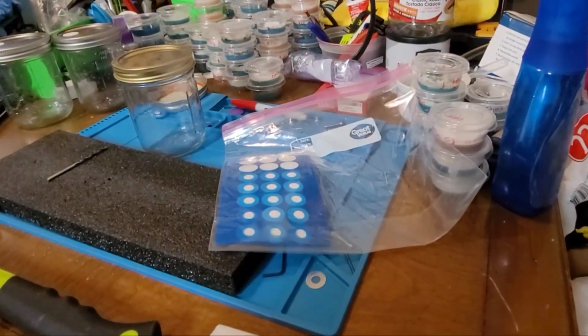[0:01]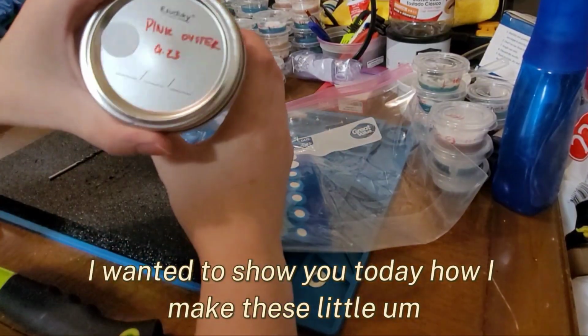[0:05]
Hi again everyone, I wanted to show you today how I make these little grain spawn jars.
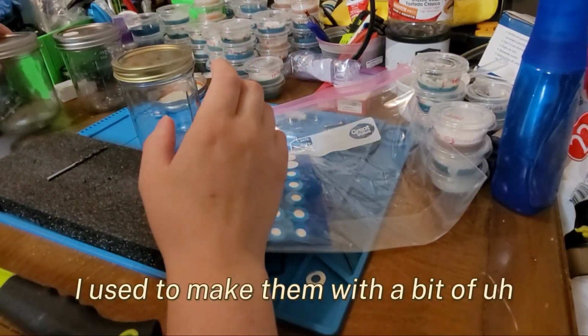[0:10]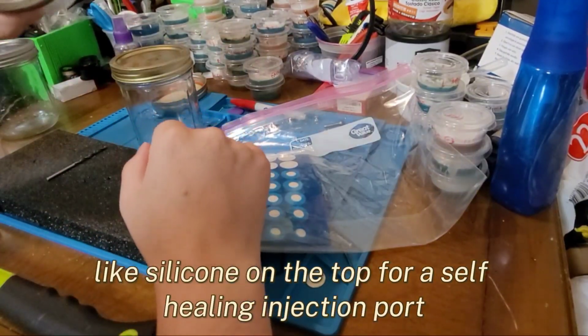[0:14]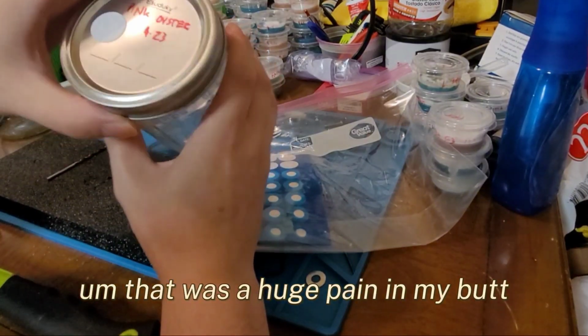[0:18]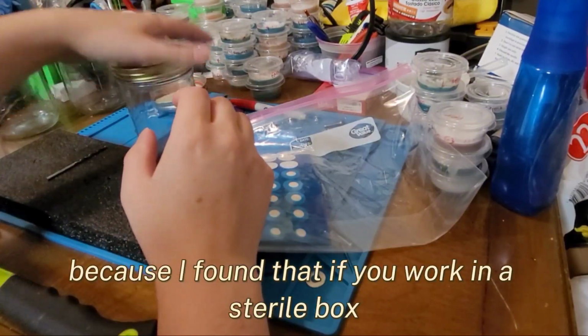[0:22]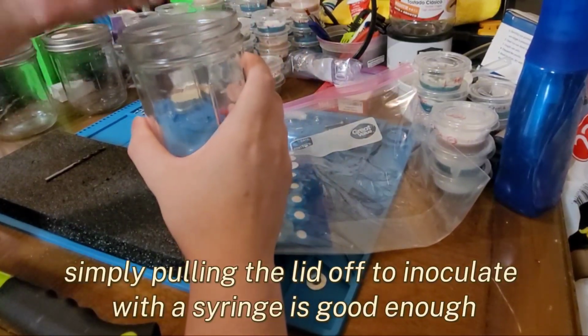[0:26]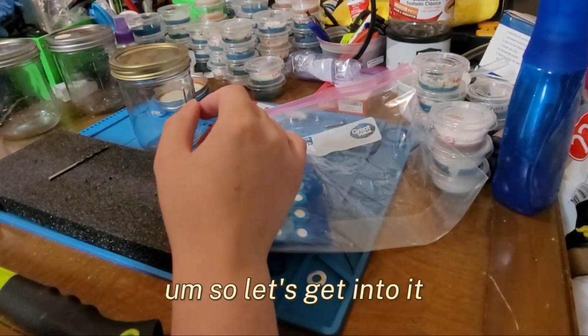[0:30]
I used to make them with a bit of silicone on the top for a self-healing injection port. That was a huge pain in my butt, and I don't really do that anymore because I found that if you work in a still air box or a clean environment, simply pulling the lid off to inoculate with a syringe is good enough. So let's get into it.
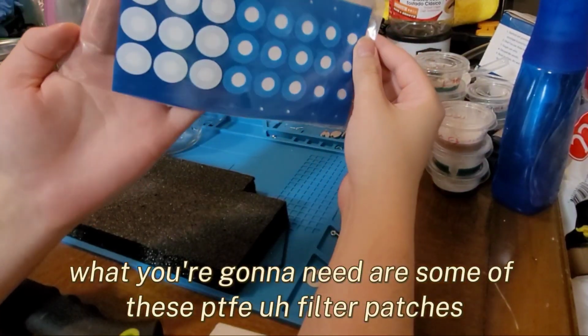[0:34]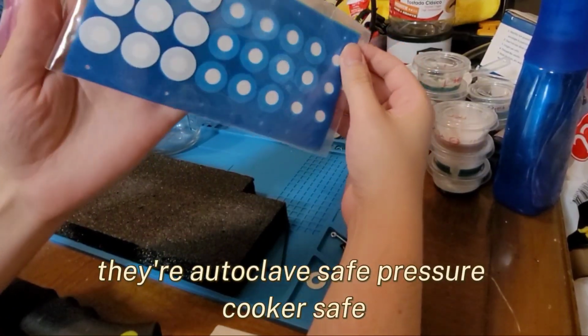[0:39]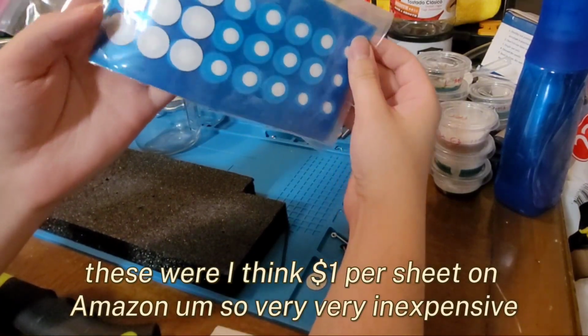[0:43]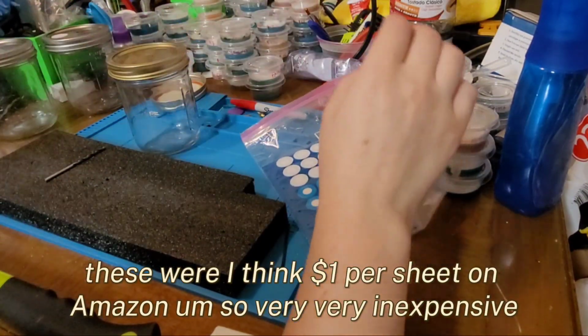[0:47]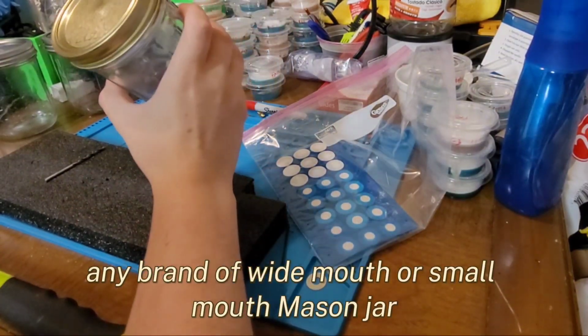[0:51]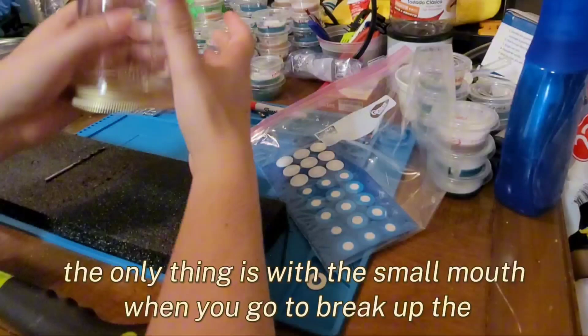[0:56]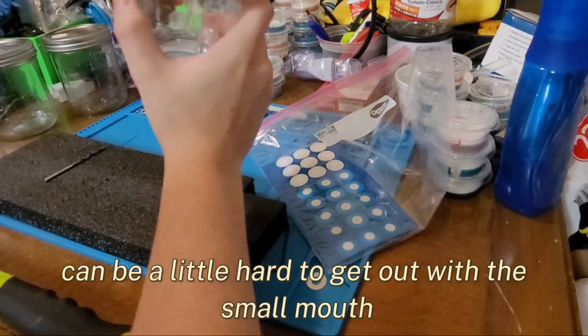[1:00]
What you're going to need are some of these PTFE filter patches. They're autoclave safe, pressure cooker safe. These were, I think, $1 per sheet on Amazon, so very, very inexpensive. Any brand of wide mouth or small mouth mason jar, either would work for this. The only thing is with the small mouth, when you go to break up the grain, it can be a little hard to get out, but you can still do it.
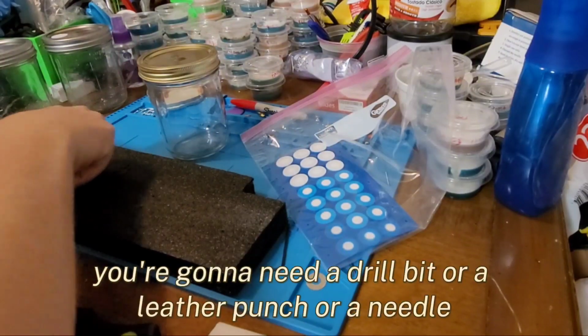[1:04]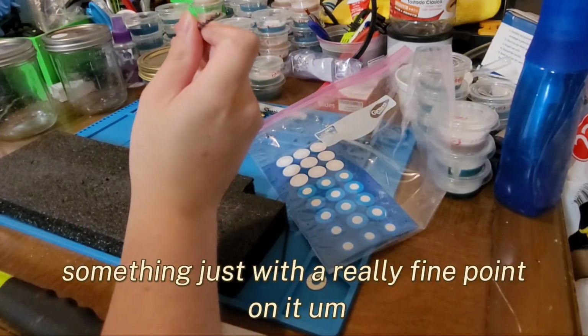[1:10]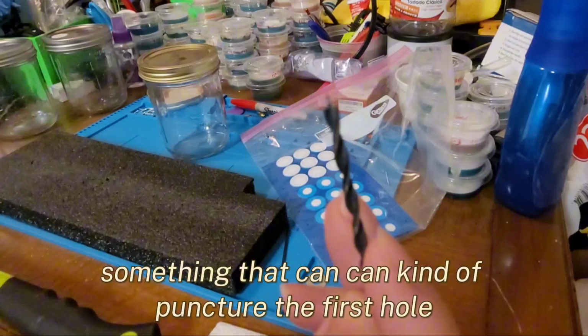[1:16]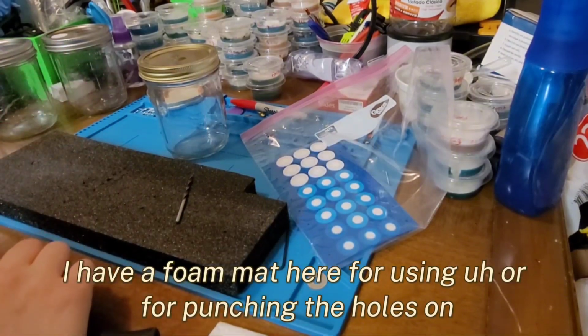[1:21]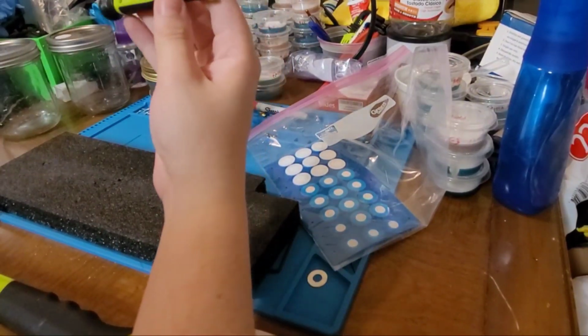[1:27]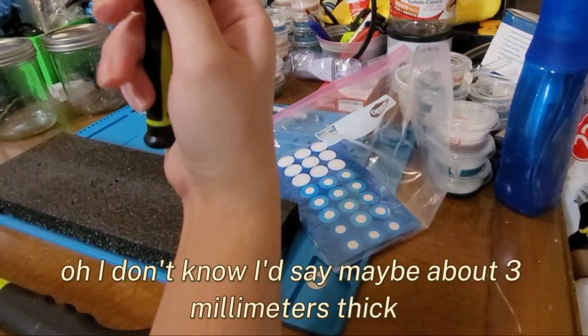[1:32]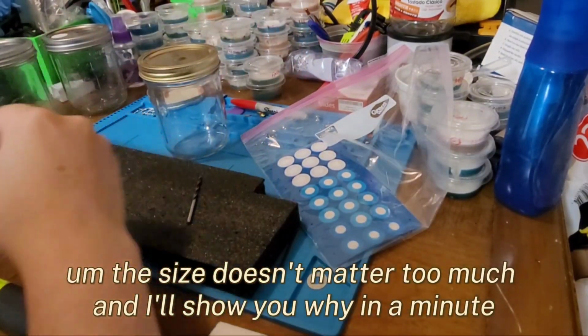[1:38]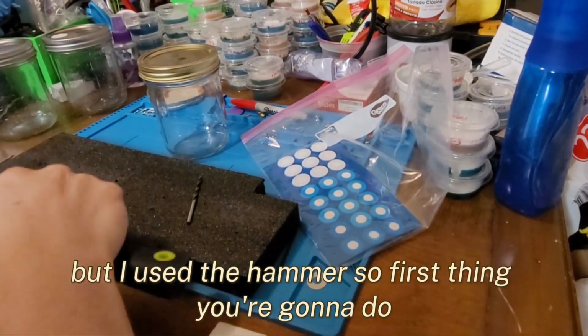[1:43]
So you need one jar. You're gonna need a drill bit or a leather punch or a needle, something with a really fine point on it, something that can puncture the first hole. I have a foam mat here for punching the holes on. I have just a regular Phillips screwdriver. It's maybe about 3 millimeters thick. The size doesn't matter too much, and I'll show you why in a minute. And then you're going to need a hammer. You could do this with a drill, but I used the hammer.
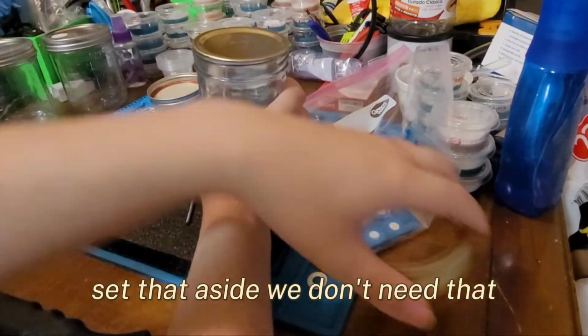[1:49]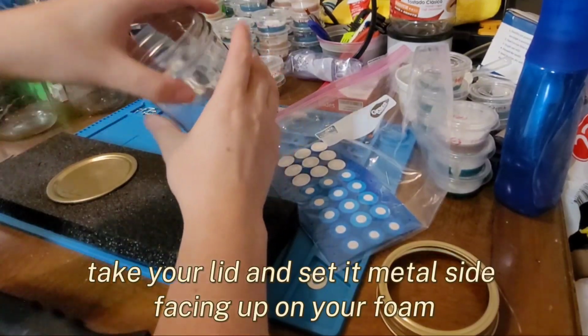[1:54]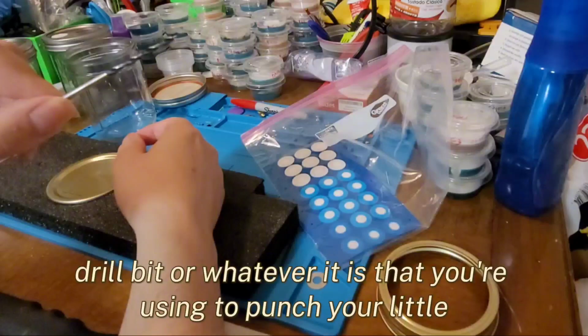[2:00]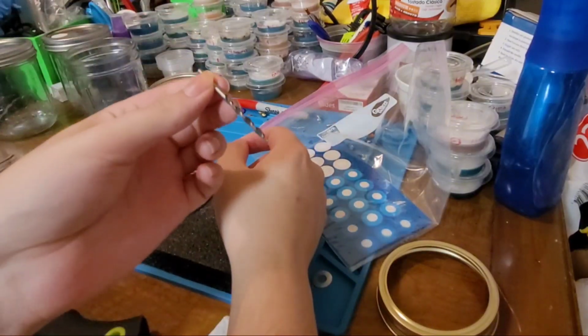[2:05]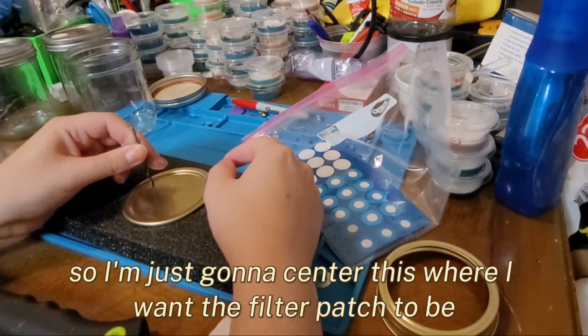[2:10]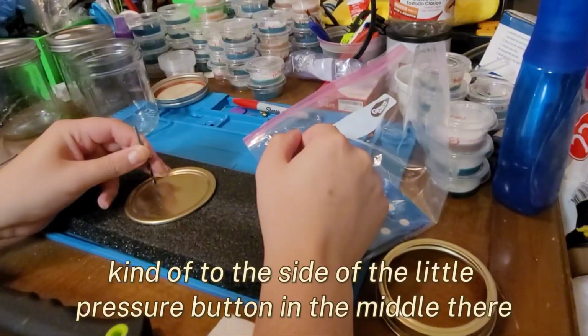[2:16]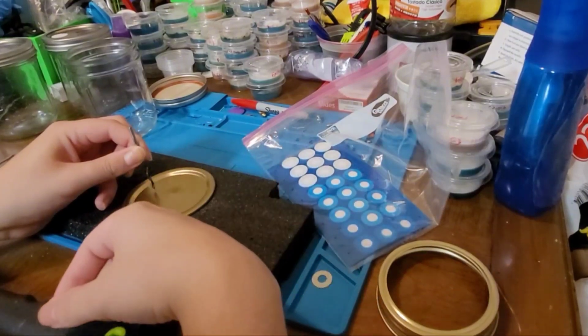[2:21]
So first thing you're going to do, take off your ring, set that aside, we don't need that. Take your lid and set it metal side facing up on your foam. Then you're going to take your punch or your drill bit or whatever you're using to punch your first hole in it. I like to put mine on the left side, centered where I want the filter patch to be, off to the side of the little press button in the middle. I also want to make sure I'll still have room to write a label on top and a date down below.
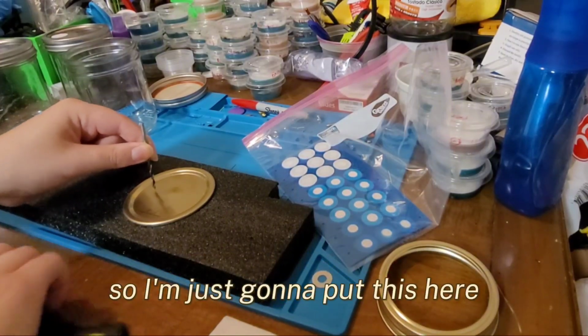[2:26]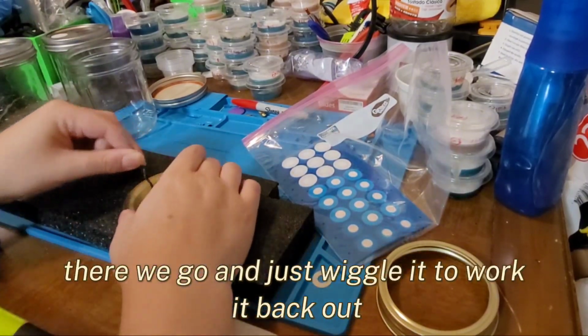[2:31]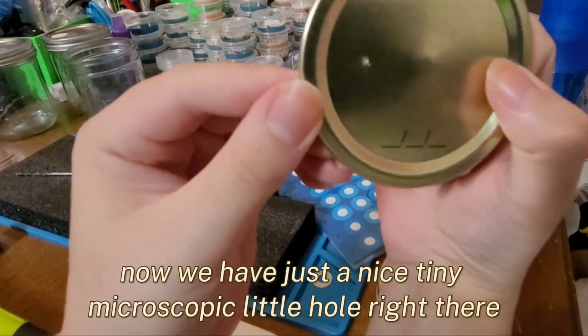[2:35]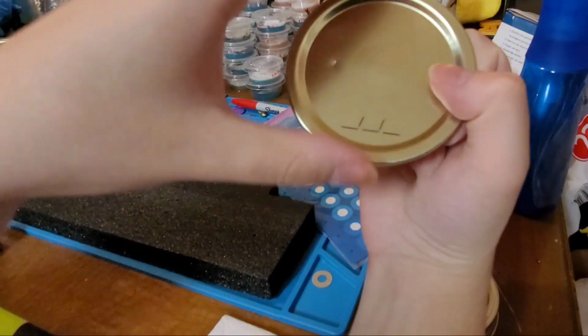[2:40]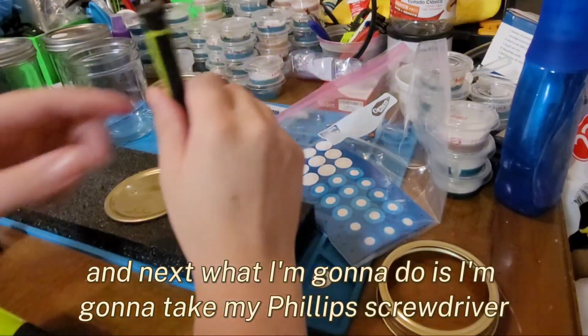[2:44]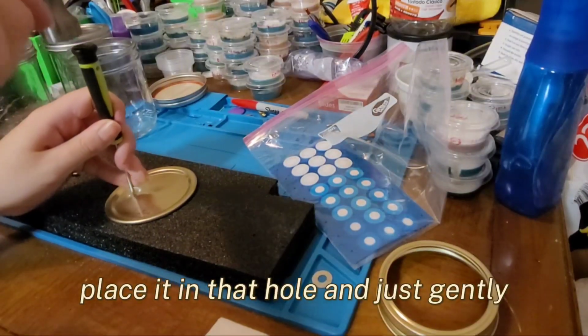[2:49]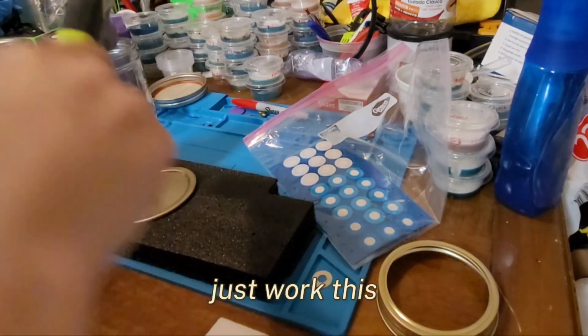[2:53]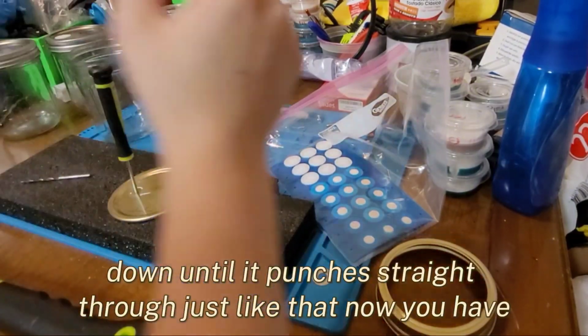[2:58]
So I'm just going to put this here and give it a little tap with the hammer. There we go. And just wiggle it to work it back out. Now we have a nice tiny microscopic little hole right there. Next I'm going to take my Phillips screwdriver, place it in that hole, and just gently, not too much force because I don't want to break it, work this down until it punches straight through, just like that.
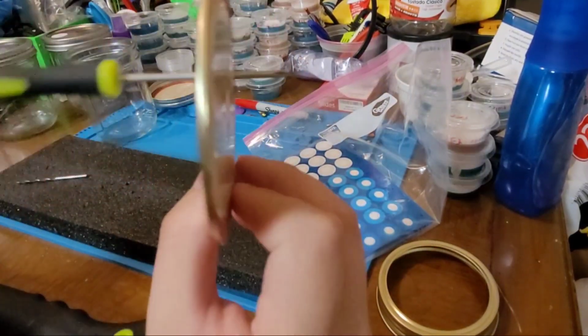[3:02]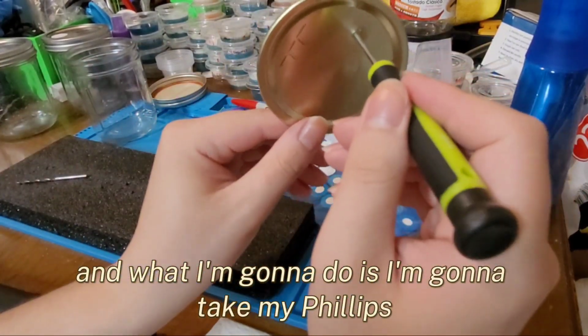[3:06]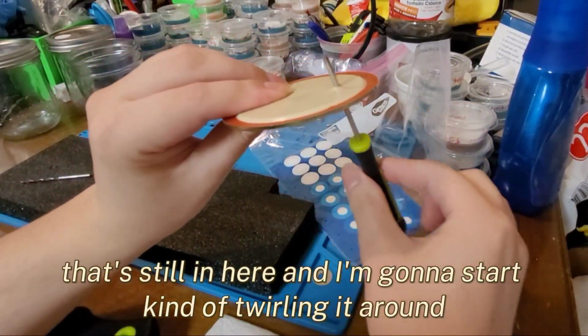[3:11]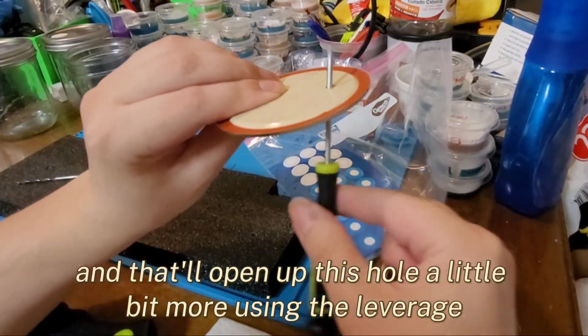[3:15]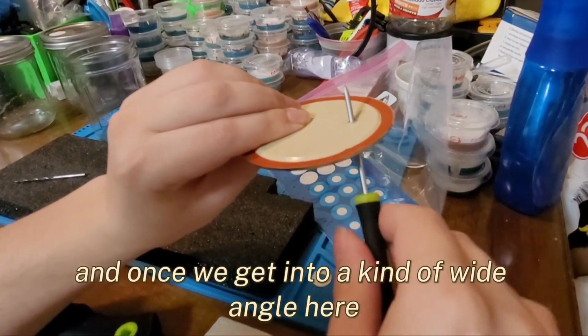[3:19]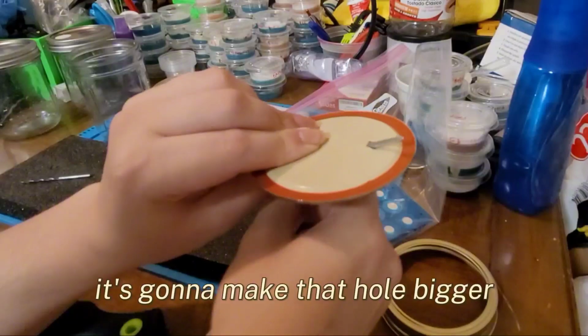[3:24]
Now you have a hole that goes all the way through, right? And I'm going to take my Phillips that's still in here, and start twirling it around. Twirl it around, and that'll open up this hole a little bit more using the leverage. And once we get into a wide angle here, it's going to make that hole bigger.
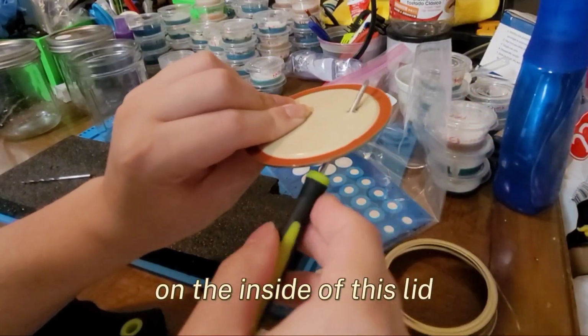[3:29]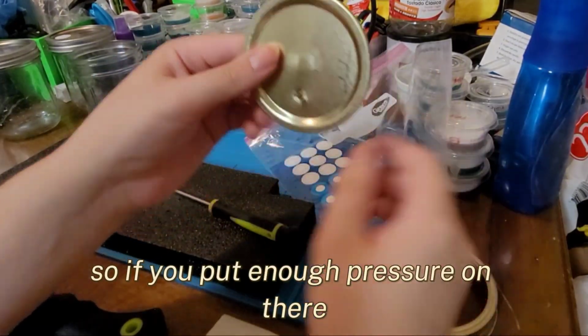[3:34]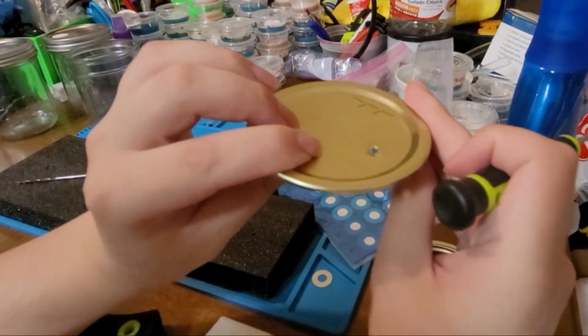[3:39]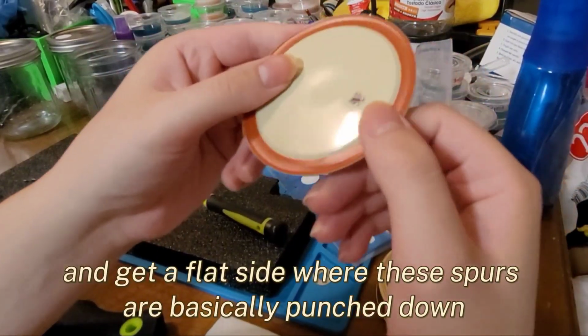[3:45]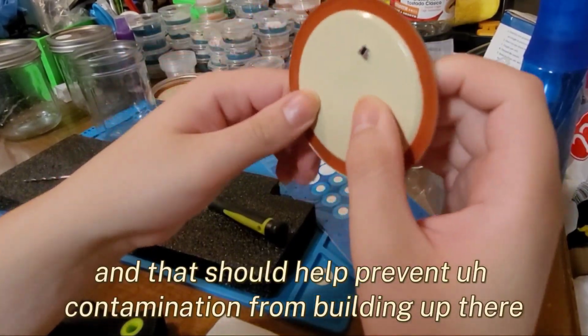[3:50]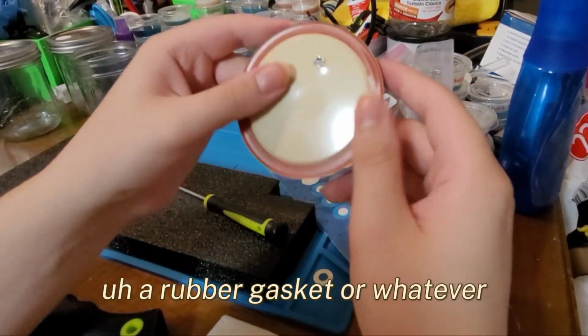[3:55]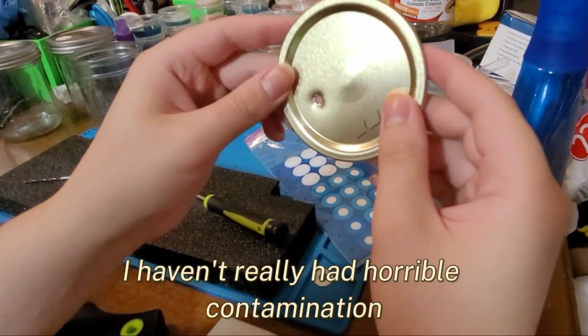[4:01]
It's also going to help flatten down the little spurs on the inside of this lid from the hole we just punched in there. So if you put enough pressure on there, you can work this back and forth and get that hole flat, and get a flat side where these spurs are basically punched down. And that should help prevent contamination from building up there. Some people choose to sand these down or coat them in a rubber gasket or whatever, but I haven't been doing that, and I haven't really had horrible contamination, so I think that this is good enough.
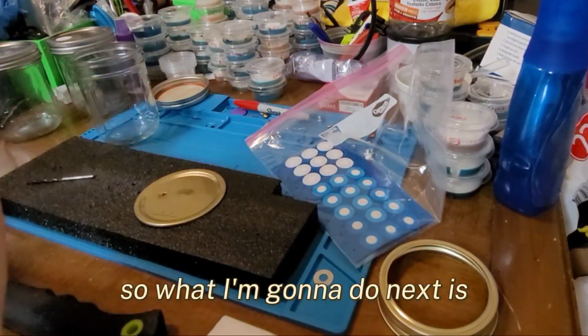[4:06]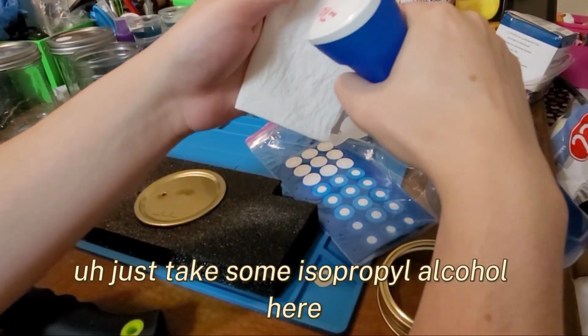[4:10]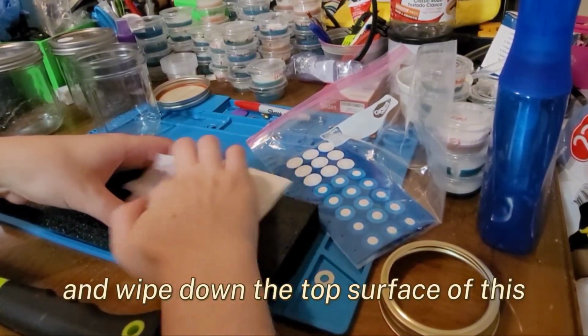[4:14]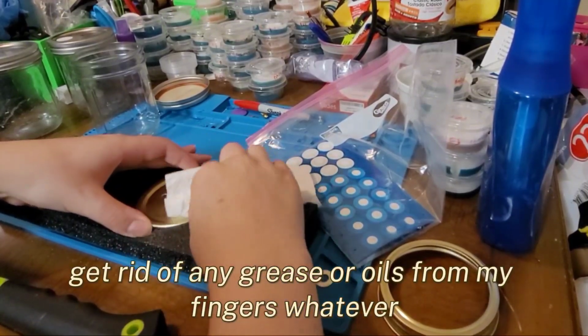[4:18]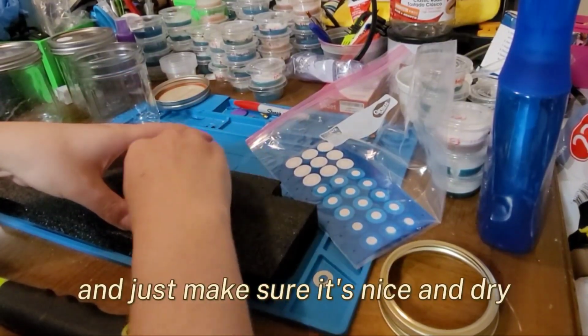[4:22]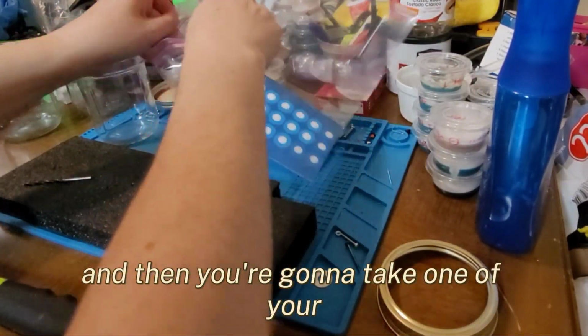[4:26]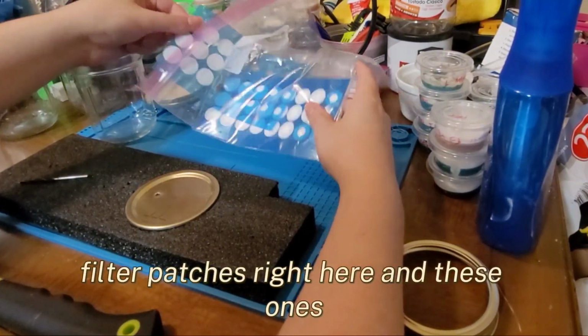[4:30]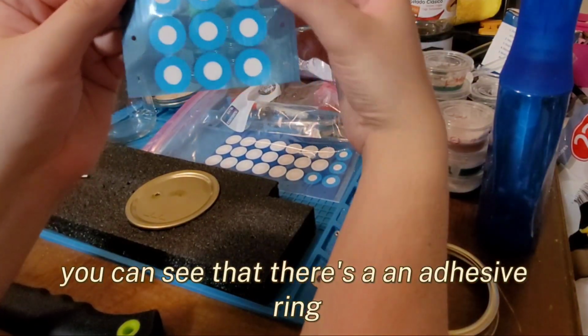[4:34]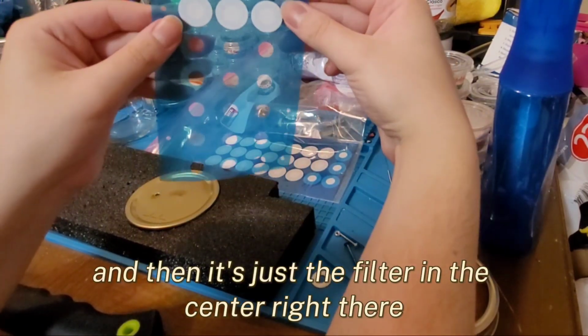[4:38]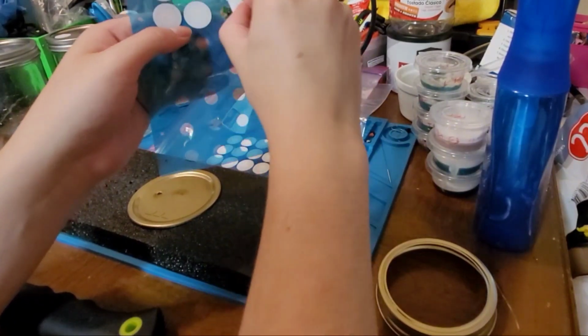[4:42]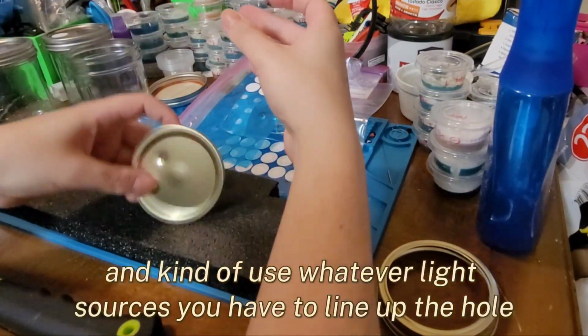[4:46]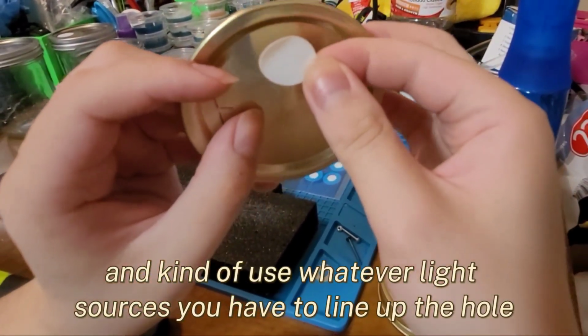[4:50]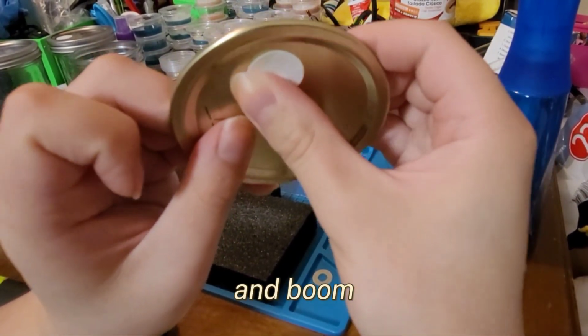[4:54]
So what I'm going to do next is take some isopropyl alcohol and wipe down the top surface of this, get rid of any grease or oils from my fingers, and just make sure it's nice and dry. And then you're going to take one of your filter patches. You can see there's an adhesive ring, and then it's just the filter in the center. So you just take one of these, peel it off, and use whatever light sources you have to line up the hole, and boom, there you go.
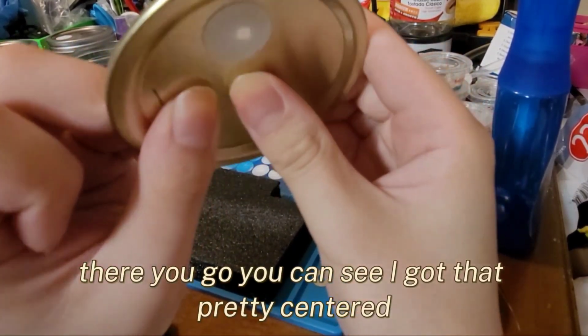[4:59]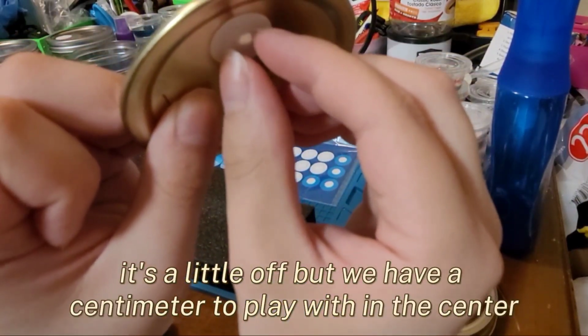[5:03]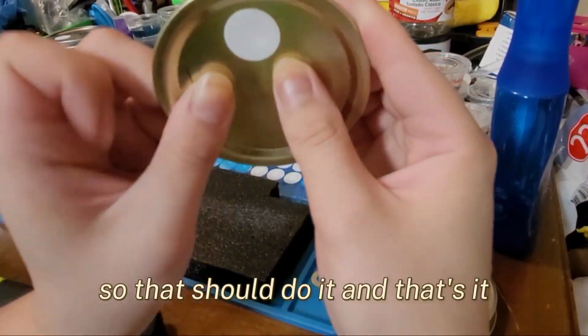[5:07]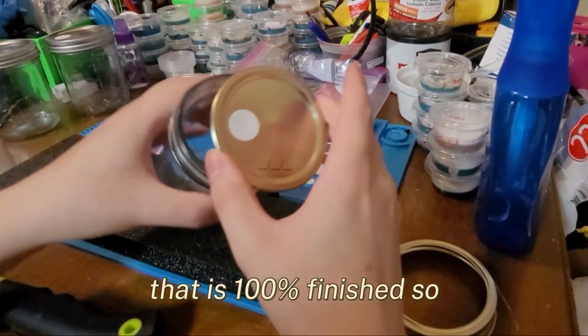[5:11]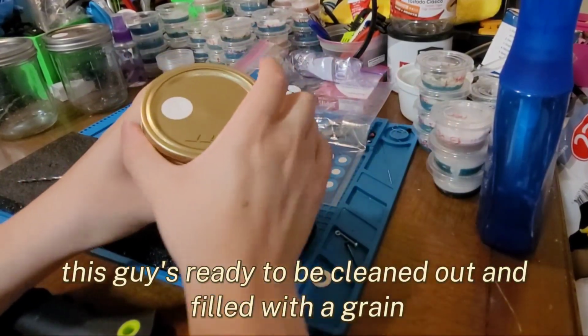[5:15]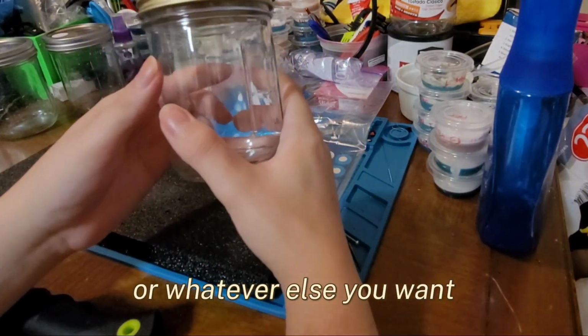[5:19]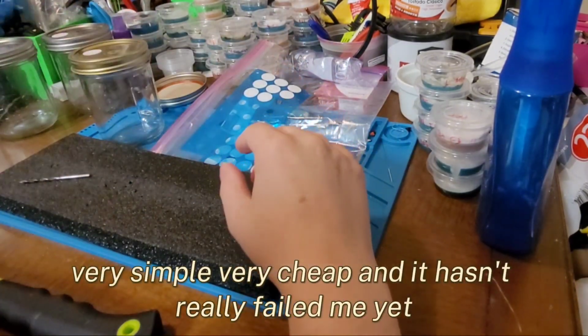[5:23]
You can see I got that pretty centered. It's a little off, but we have a centimeter to play with in the center, so that should do it. And that's it. That is 100% finished. So this guy's ready to be cleaned out and filled with a grain or whatever else you want. That's it. Very simple, very cheap, and it hasn't really failed me yet.